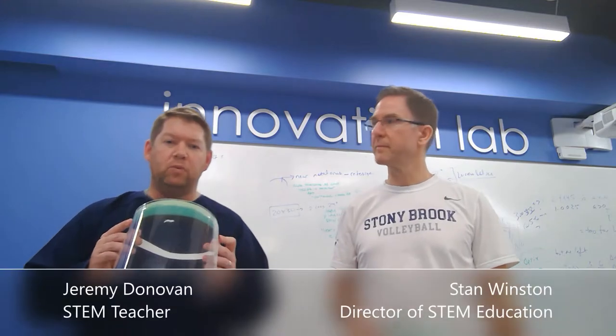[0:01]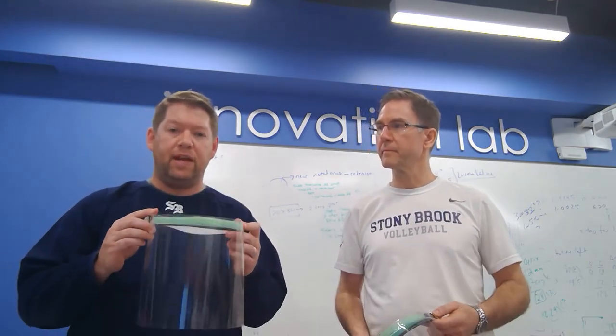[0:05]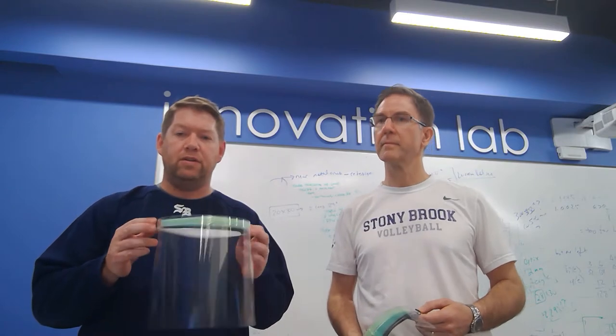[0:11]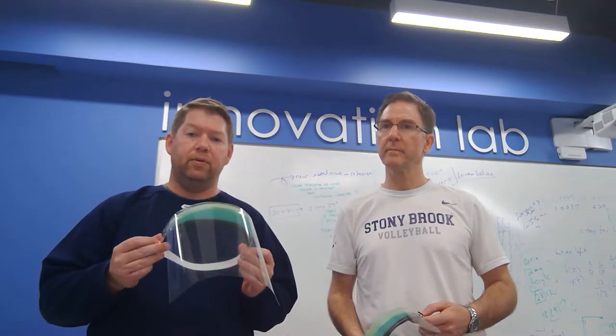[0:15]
What we want to do is make it easy for you to fabricate these for your local hospitals just as much as we have. Basically, the concept that we started out with here is that we wanted something that was robust, that was reusable, but it was also quick, simple, and cheap to manufacture, and we think we found a perfect solution to the problem that the nation is facing.
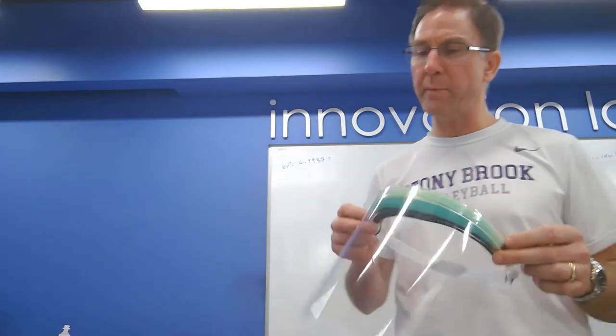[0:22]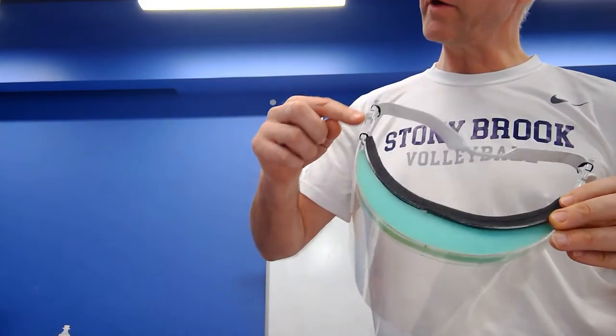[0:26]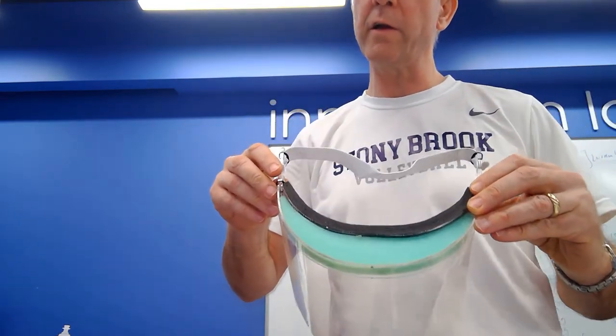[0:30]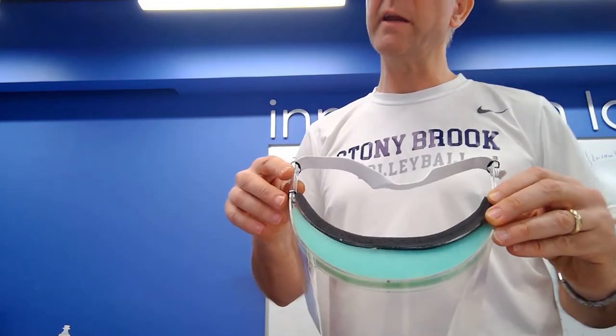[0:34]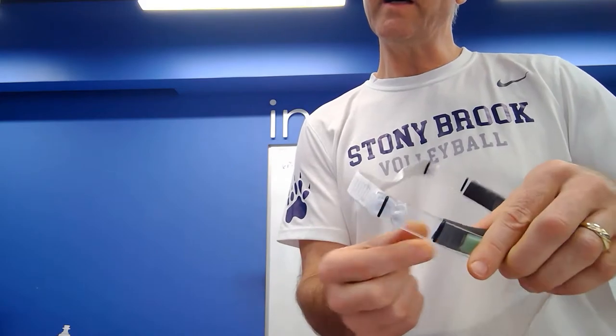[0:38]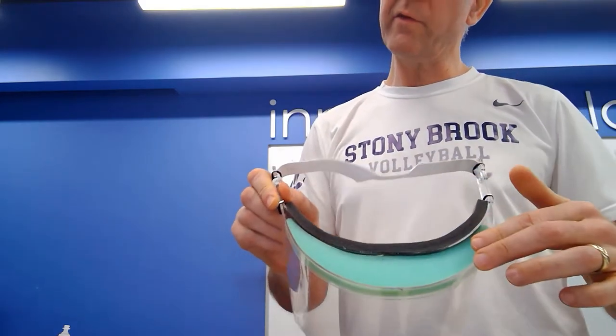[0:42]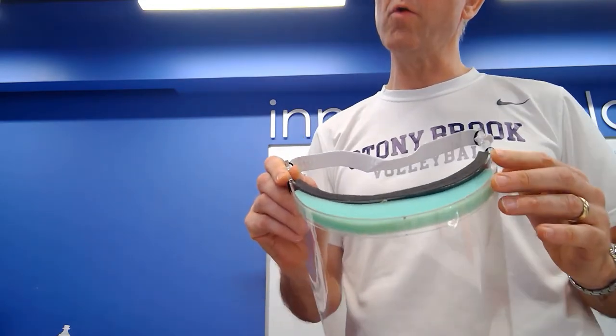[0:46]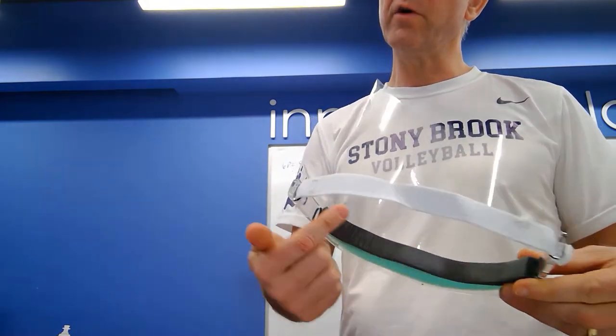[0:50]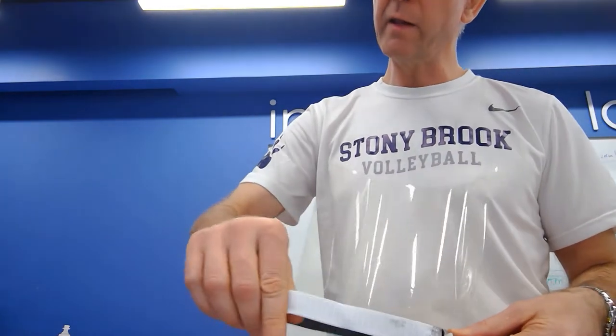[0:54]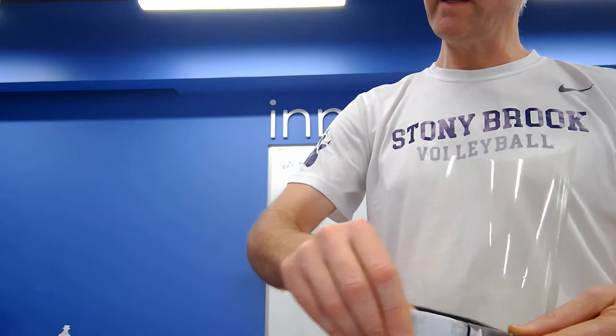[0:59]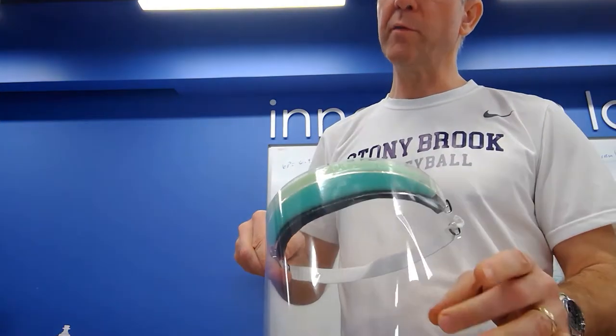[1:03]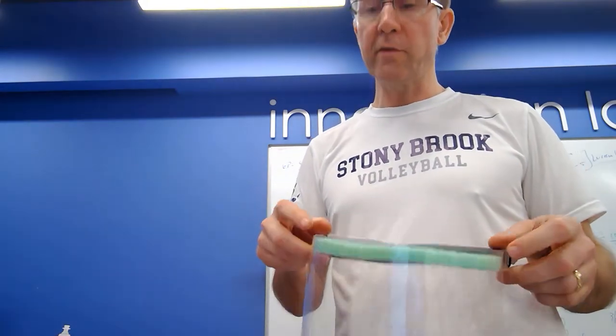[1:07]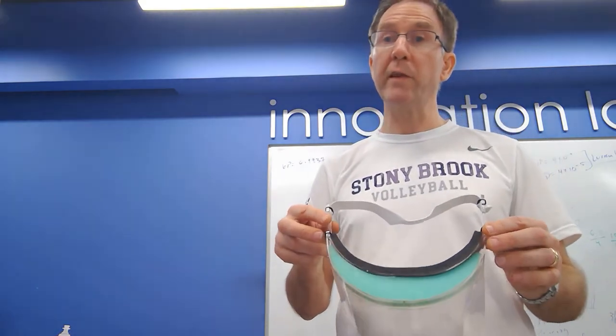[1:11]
I want to tell a little bit about the particular parts of it. First of all, you've got your two acrylic arches, two separate pieces that are cut on the laser cutter flat and then bent in an oven. These are bound by simple O-rings. And then inside, you've got a foam insert to keep particulate from falling in the case of a sneeze or whatever. You've got weather stripping along here for comfortable wear on the forehead. In the back, you've got an elastic band, also held with plastic tab and the O-rings. You've got a simple sheet of plastic here for the face guard. And this entire thing runs for under 50 cents per face shield.
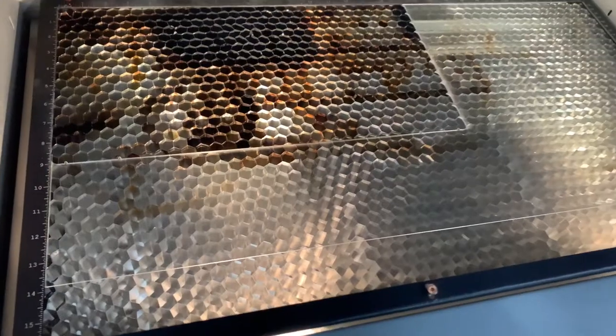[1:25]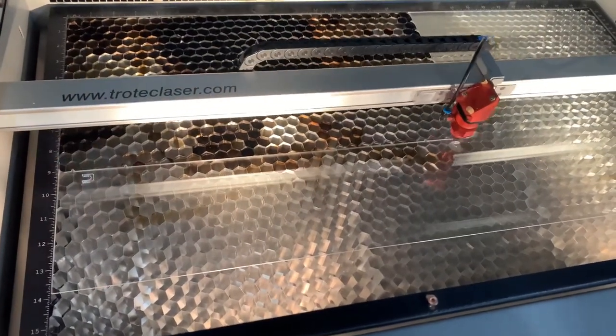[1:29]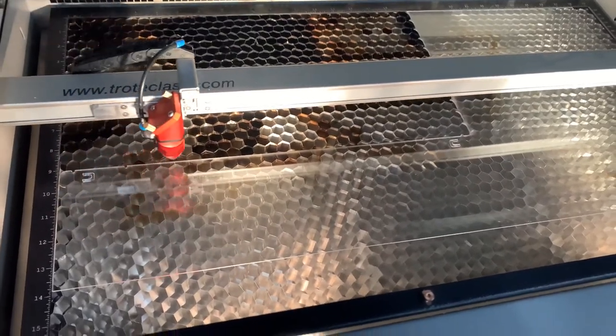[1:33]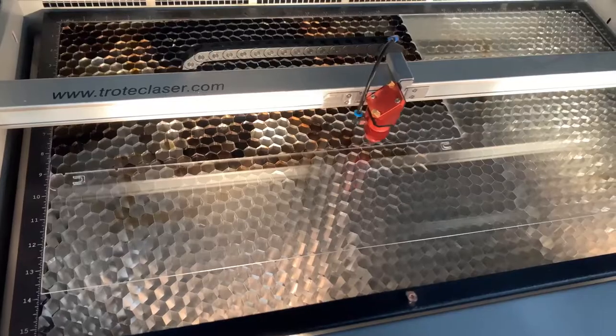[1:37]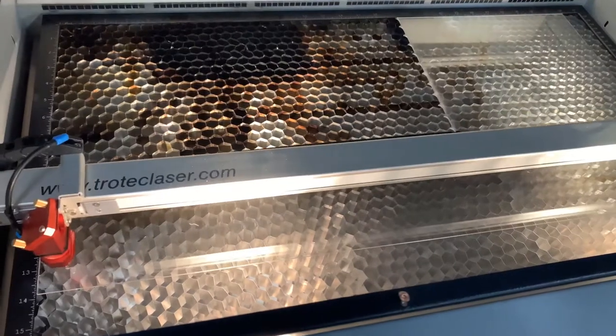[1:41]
The Corel Draw files include 20 acrylic strips that we will mold into the acrylic arches for the visor that are bound together but easily snap apart after you've completed the molding process. The laser cutter we are using is a Trotec Speedy 300, which is an 80 watt, and the power settings that we use are 1.5 speed at 100 power.
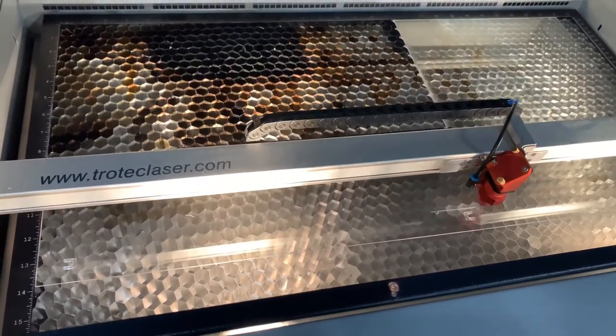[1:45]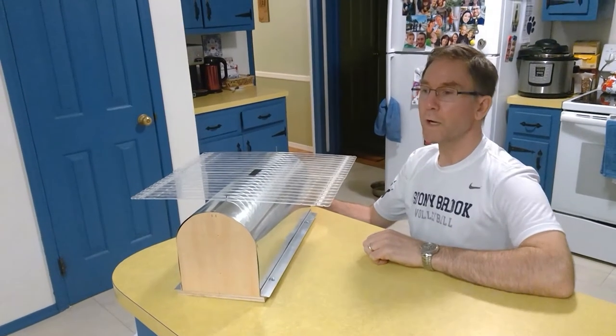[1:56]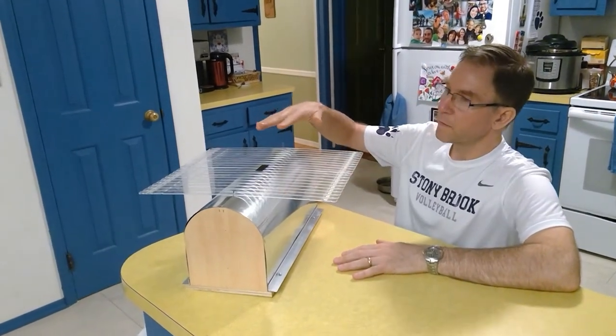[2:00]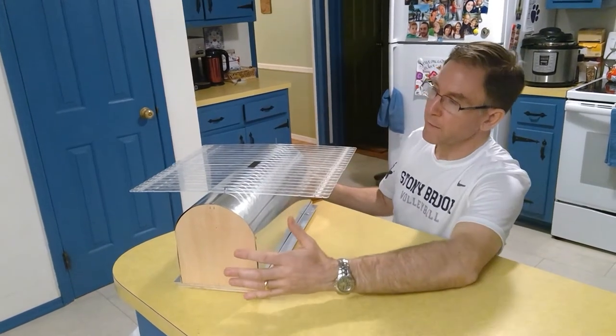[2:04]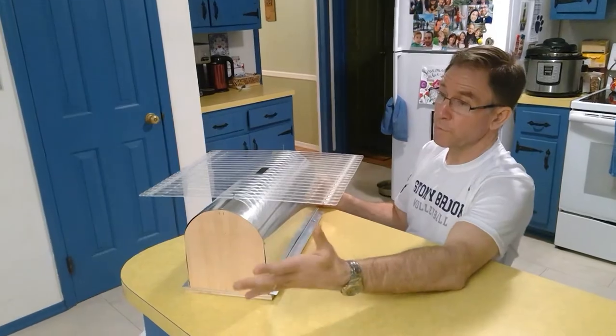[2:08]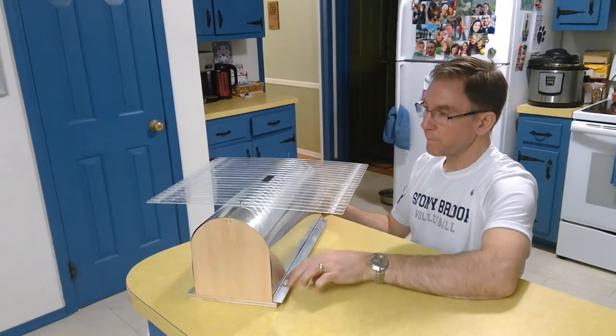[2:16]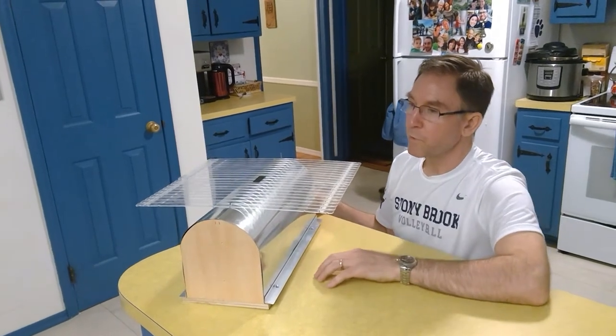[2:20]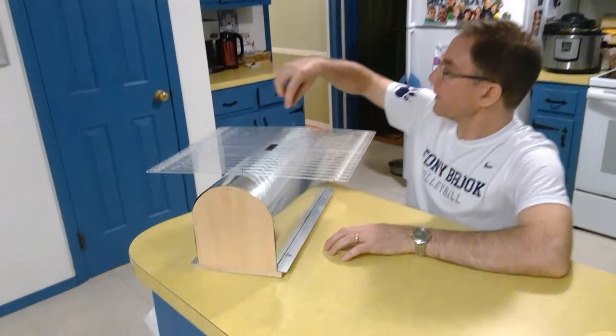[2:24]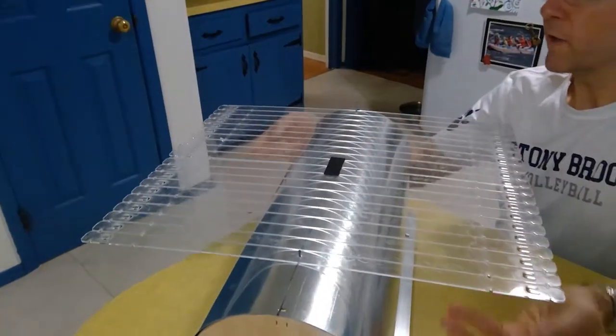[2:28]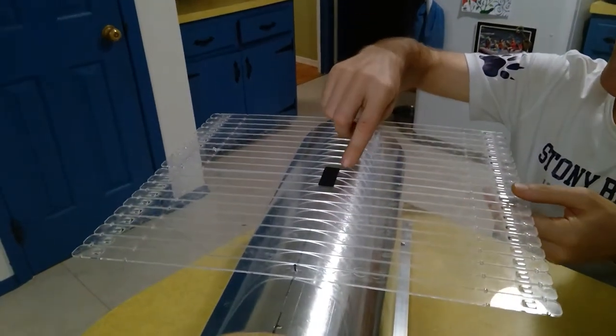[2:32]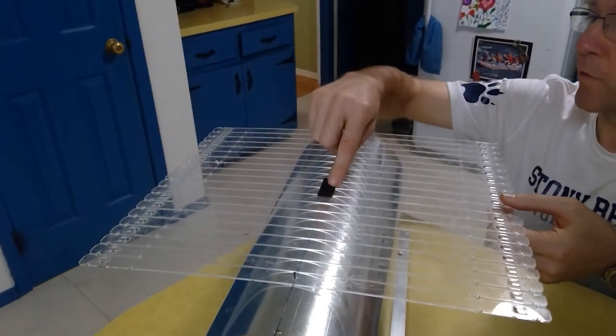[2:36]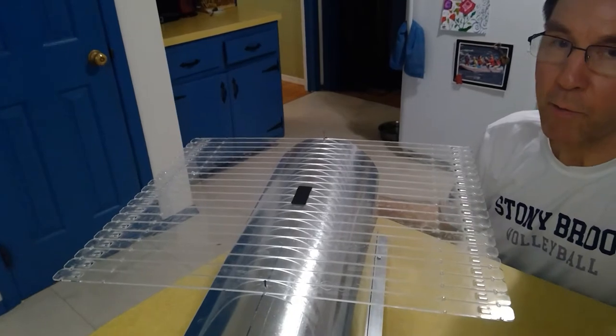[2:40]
All right, so here we are getting ready to take the sheet of plastic and put it in the oven. We've got a simple form here. You've got actually three, we'll show you in a picture, of plywood forms, front, middle, and back, wrapped with foil. Got a half inch angle iron here on the bottom. Relatively simple process to make. On the front piece and the last piece, there's a center hole marked, and the entire thing drops in it. These are all held together with tabs. When we were lifting up, this front one separated, unfortunately, so we have some gaff tape here just to hold it together. Not a problem. And now we're getting ready to put it in the oven.
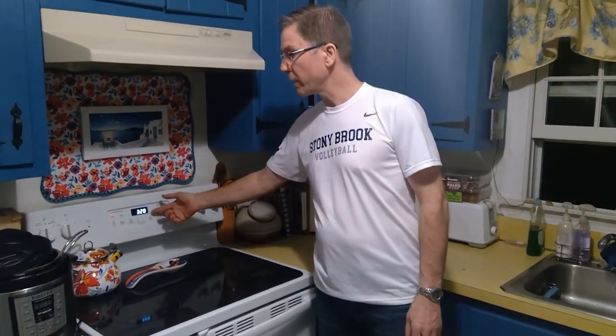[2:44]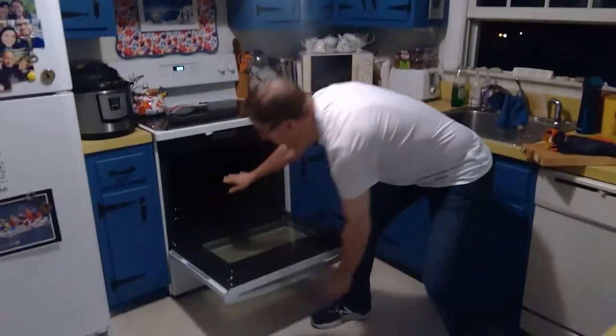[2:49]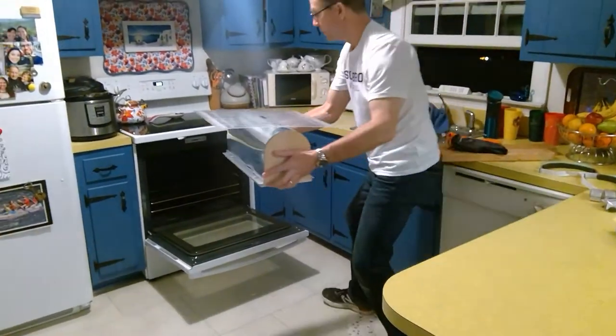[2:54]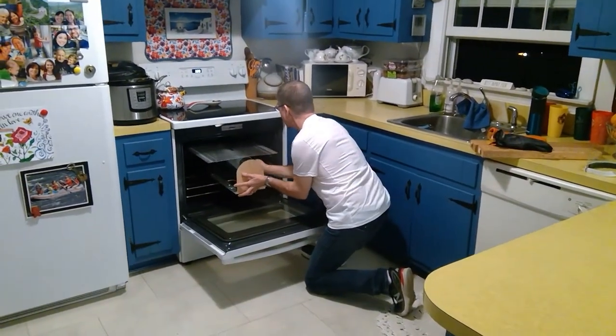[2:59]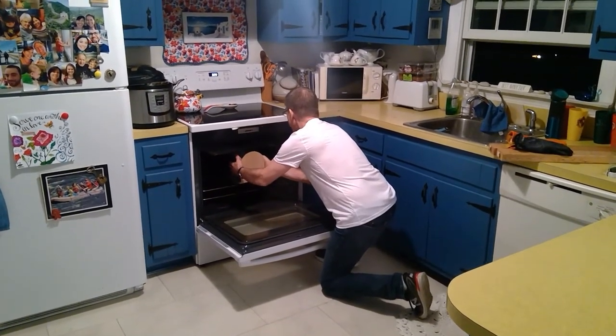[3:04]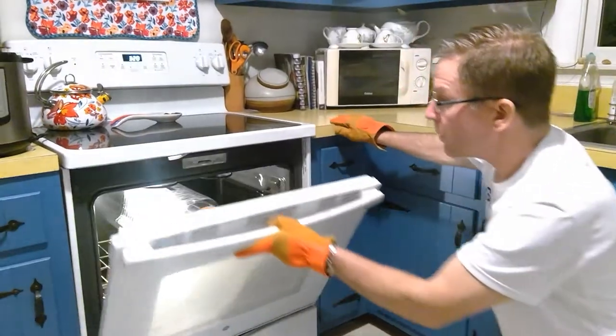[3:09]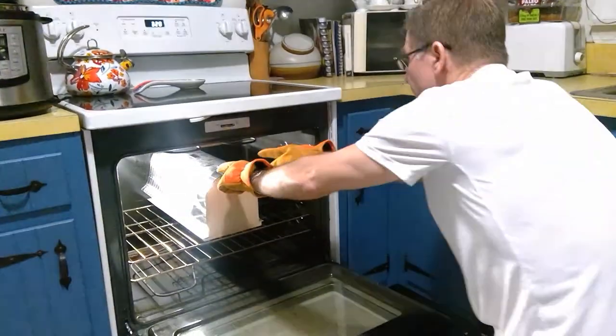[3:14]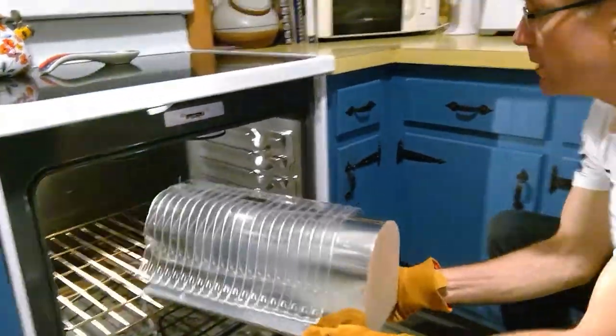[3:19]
Okay, we've got the oven preheated to 320, and we're going to slip it in. We're on the second shelf from the bottom. Most ovens are 18 inches deep. Go all the way back. You actually have to lift it up a little bit to get it up and over the lip. And then we're going to put it in for exactly 2 minutes. So you can see in here, you kind of got the Goldilocks things coming out up top. It's separated. We're going to press that down. But here we go. And out.
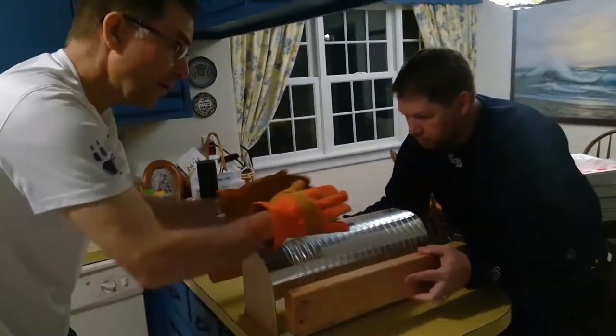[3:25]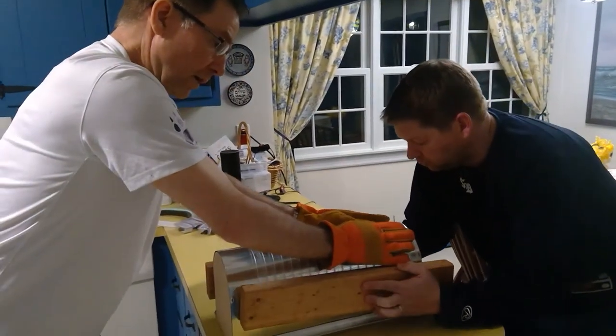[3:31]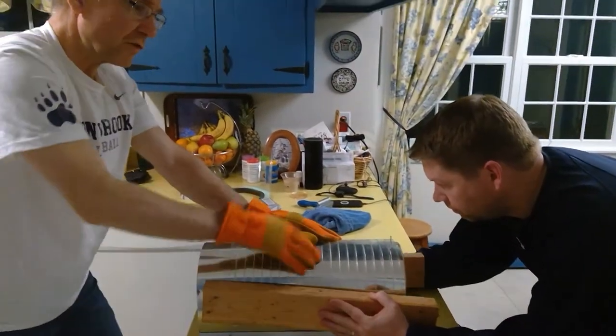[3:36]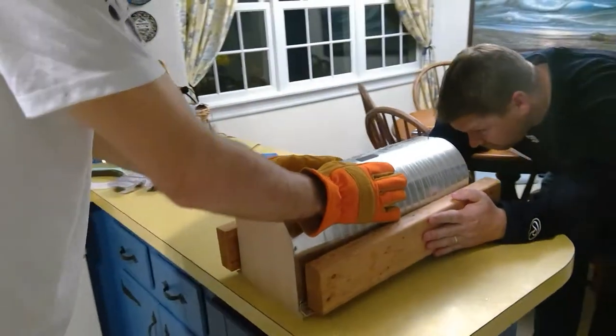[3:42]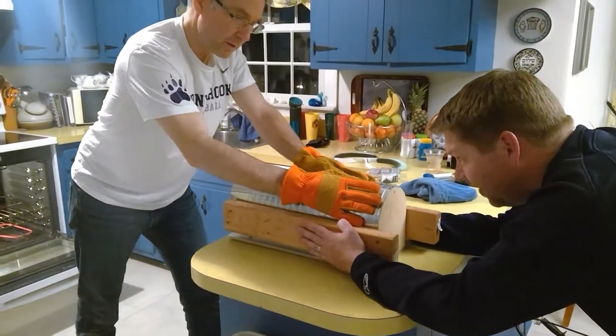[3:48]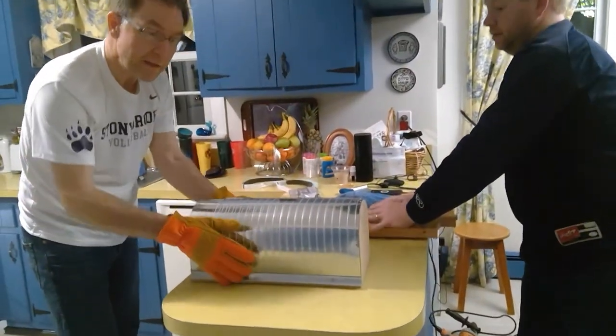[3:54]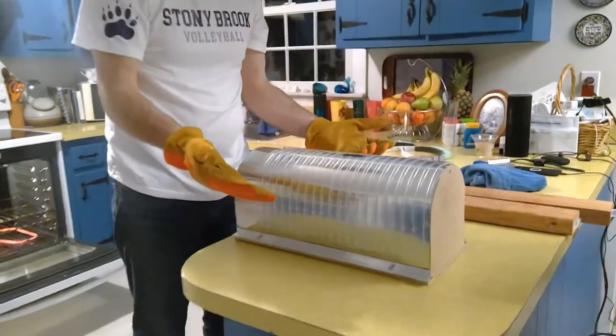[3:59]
My first thing here is going to be to push down all the top pieces as much as possible. And Jeremy is going to be working on the outer part. Push in there. I'm going to come back here. And you can't be real gentle. You got to push and basically get everything pushed down. As long as you have everything molded within the first 5 seconds or so, you should be fine. After that, you're going to get it pretty stiff. That's right. At this point, it is basically done. It's not coming out on its own. Everything is square, and we have pretty much a finished product.
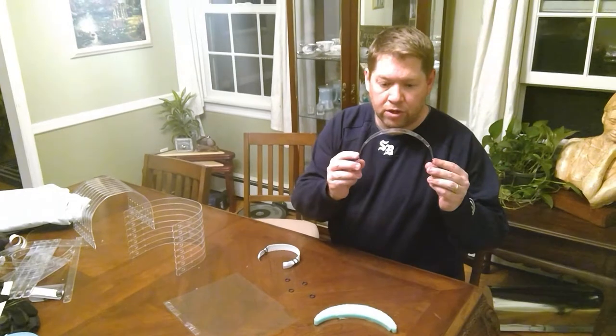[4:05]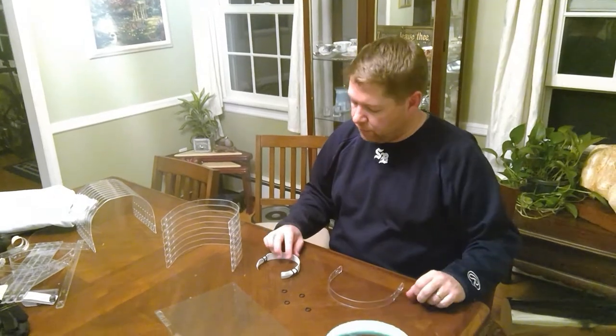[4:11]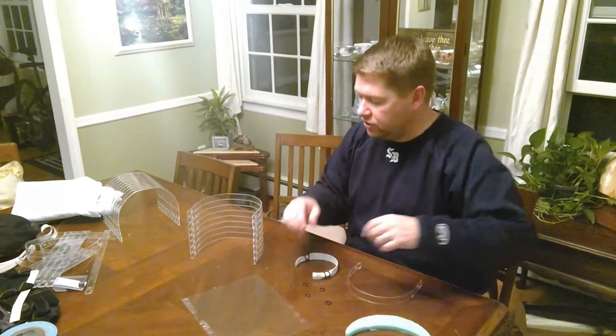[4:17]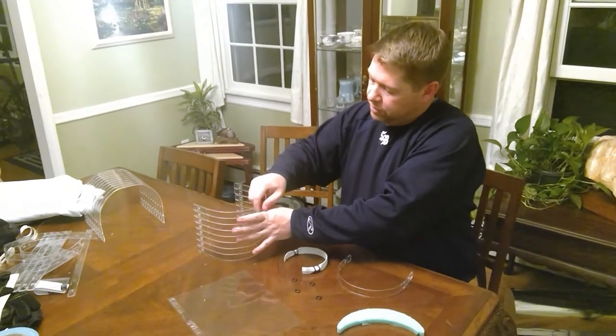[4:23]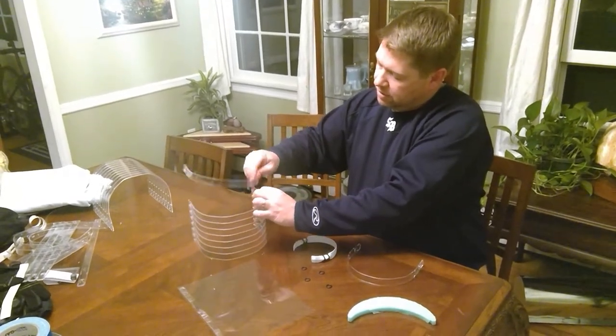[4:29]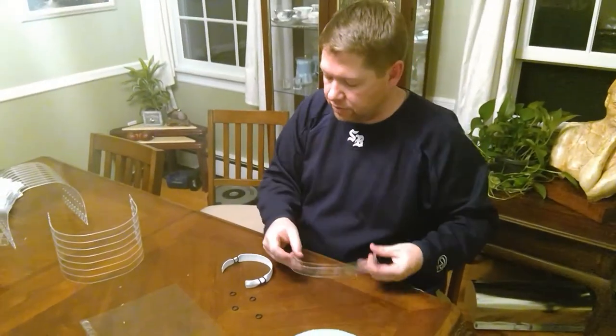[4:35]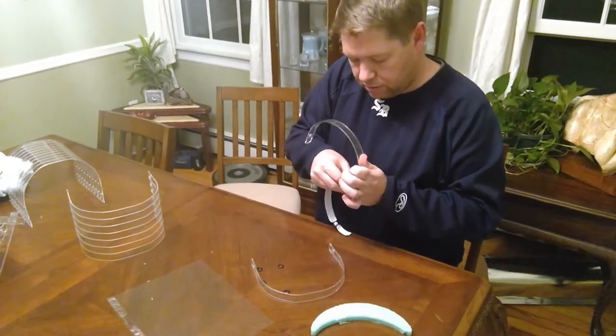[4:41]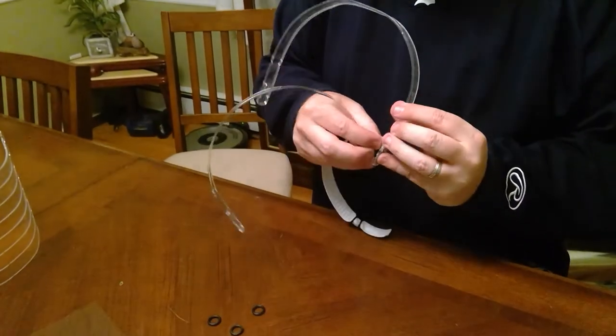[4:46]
All right, we have here our shorter arch from a previous bake, our stack of arches from the current bake, a pre-cut foam piece, our stretch of elastic with the four O-rings already placed on the elastic, and then our face shield. Simply unsnap the top arch, comes out pretty easily. The tabs are kind of easy to find on the laser cut that we sent you. And these just match up like so. Insert the elastic through the little horseshoes here. Slides right through nice and easy. And you insert it through both to get a good alignment.
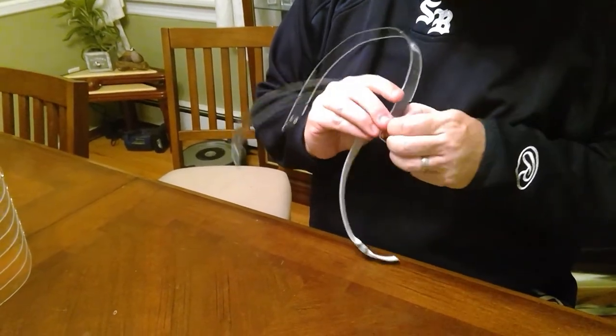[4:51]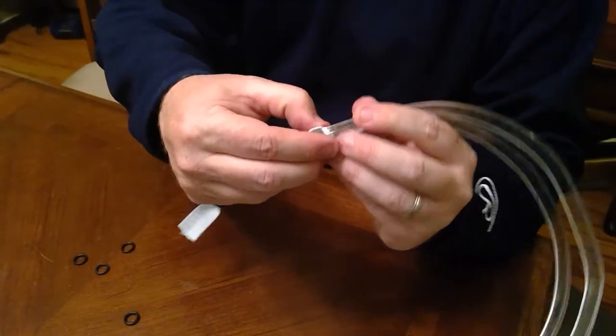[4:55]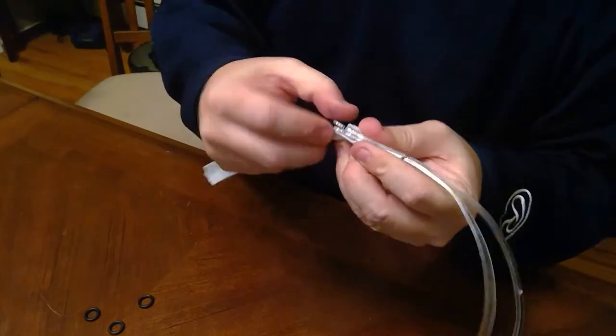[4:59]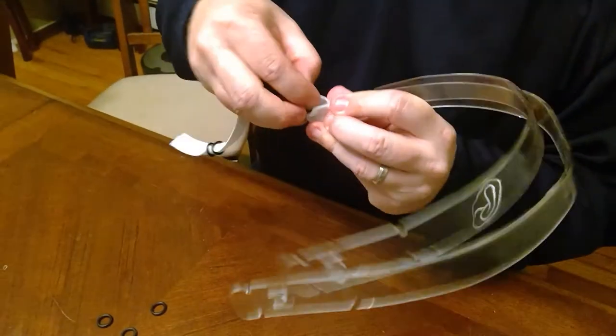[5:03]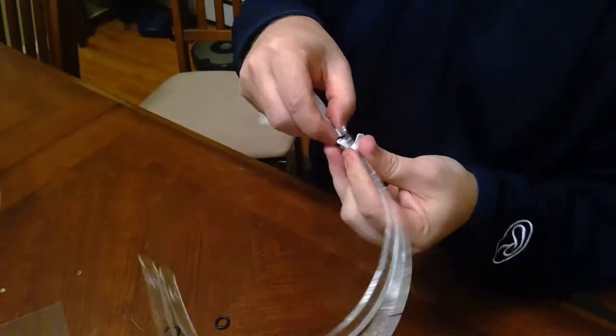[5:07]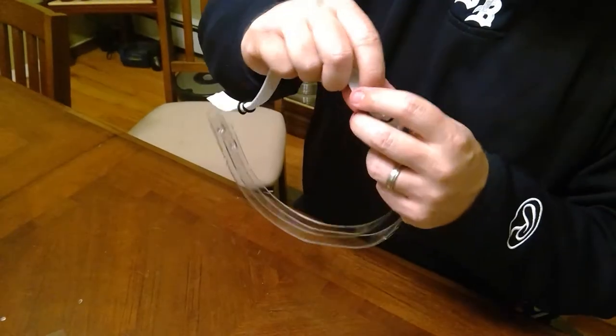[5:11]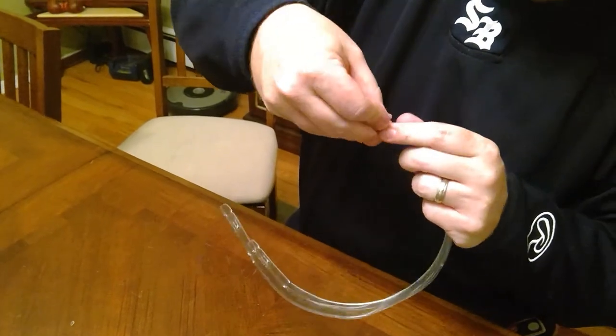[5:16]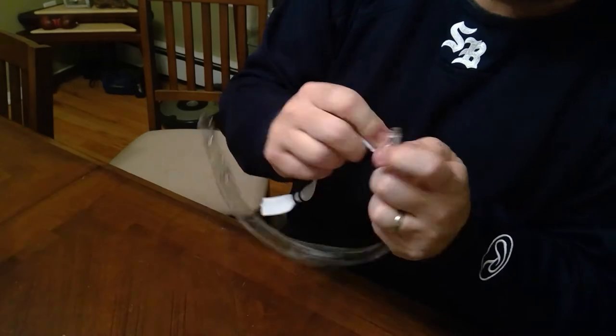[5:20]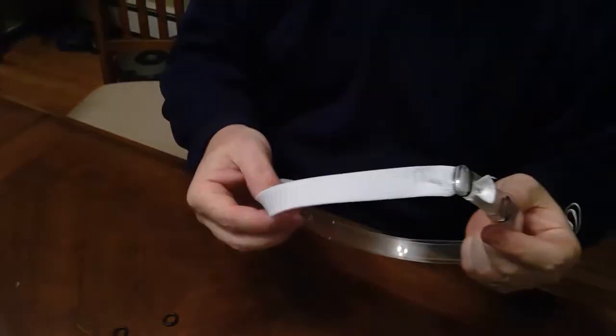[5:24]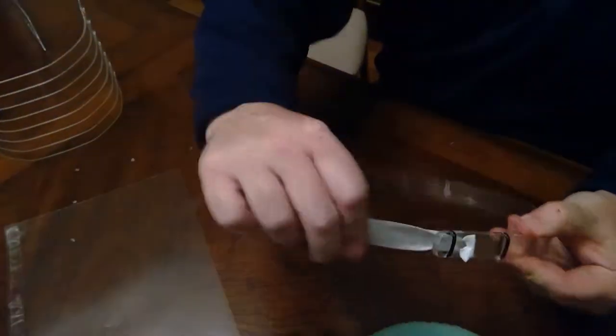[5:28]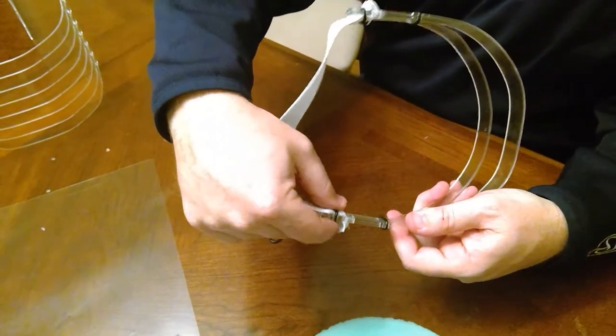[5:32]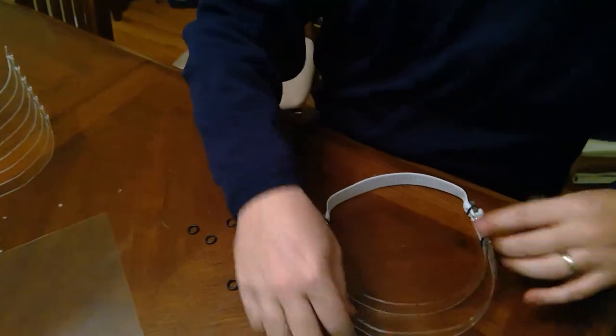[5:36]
Just like that. There's a plastic tab that sticks through a slit in the elastic. We match the first O-ring with the first divot there and stretch it around. Slides into place. We pull the elastic taut. Now we're ready to send on the second O-ring. We do the same process as the first. Right in there. And slide it down in there in place. Repeat the same action on the other side. All right, so you see now that the tabs are holding the elastic in place, secured by the O-ring. So that elastic's not coming off.
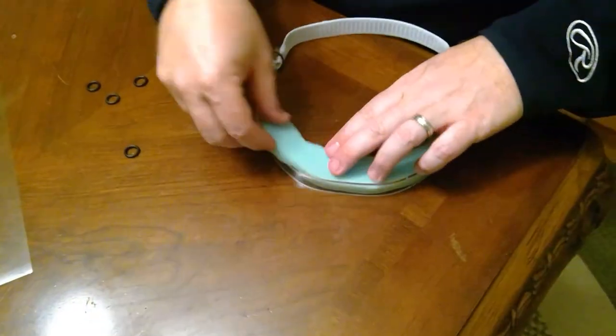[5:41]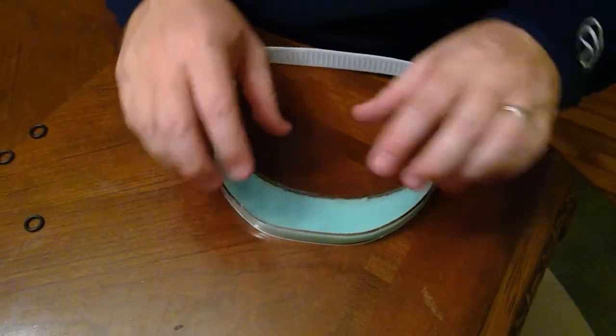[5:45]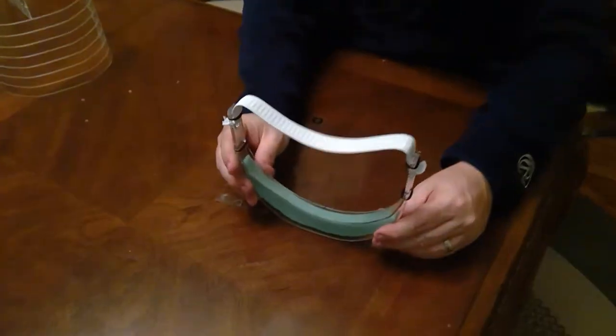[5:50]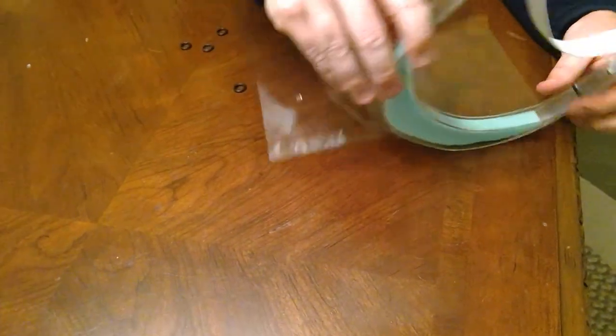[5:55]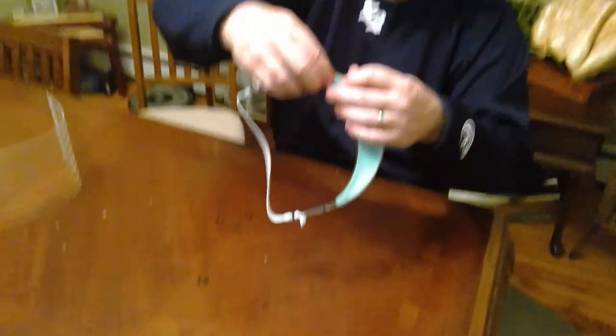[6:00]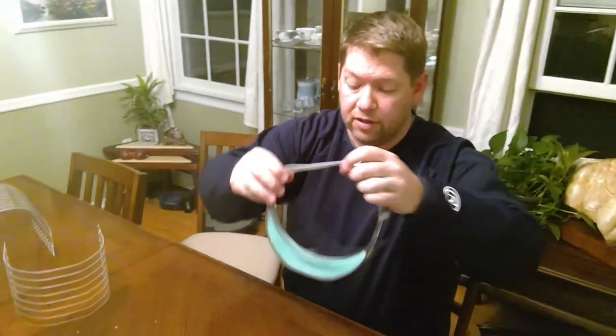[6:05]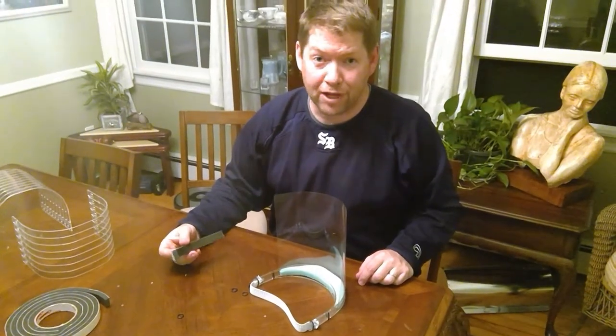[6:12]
We just sort of stuff our foam into place here. Gets a nice squishy fit. Nothing can drop in on the doctors or nurses as they're working with patients. Align with the double-sided tape. Roll each direction. Press it on. We've got ourselves a completed face shield. So we're problem solvers, not YouTubers.
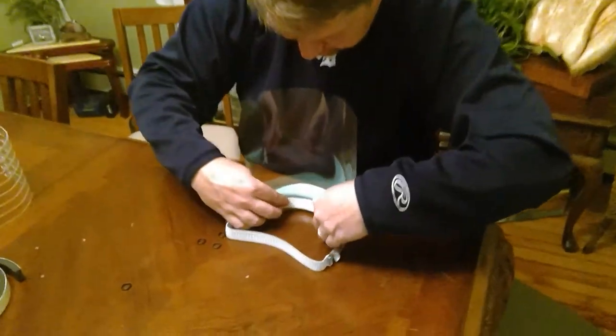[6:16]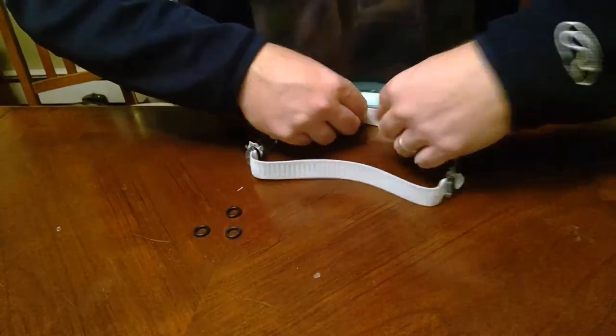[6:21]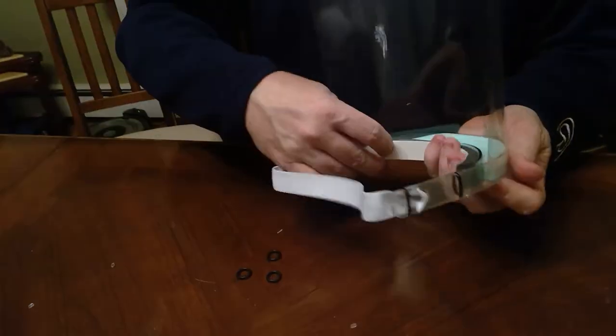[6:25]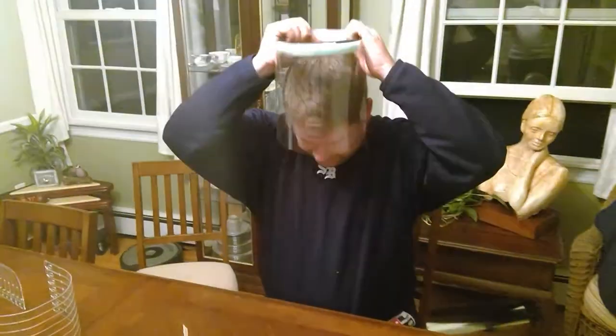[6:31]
We forgot the adhesive strip here for comfort. Just insert that on the forehead edge. Just a strip of WeatherGuard with an adhesive back. Get it in place. Peel. Now we got a nice comfy face shield for taking care of patients.
Hope you understood everything that we have, and if you have any questions, we have our contact information down below this video along with any of the instructions written out. So please let us know what help we can give, and hopefully this will be something that really helps fight the pandemic and provide the PPE that is so needed across our nation.